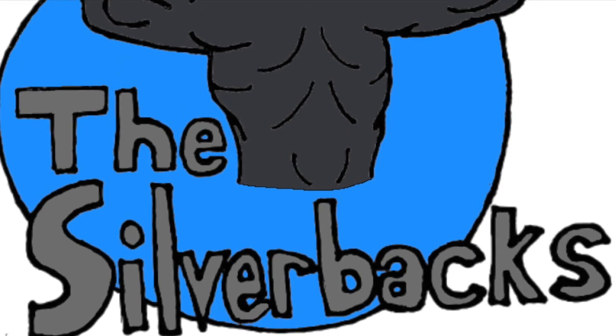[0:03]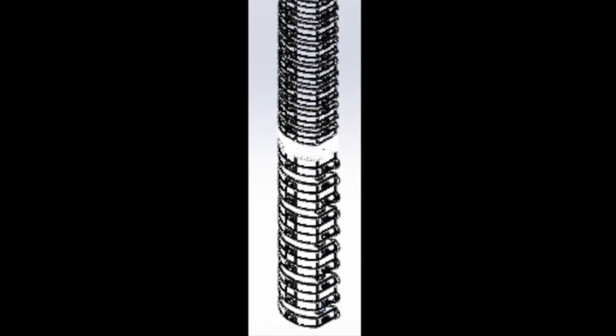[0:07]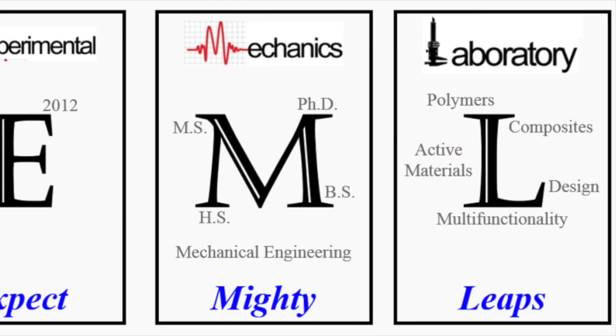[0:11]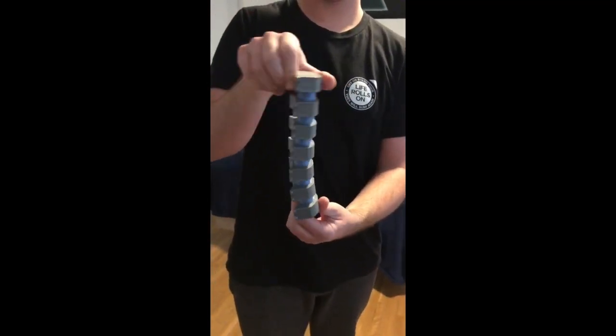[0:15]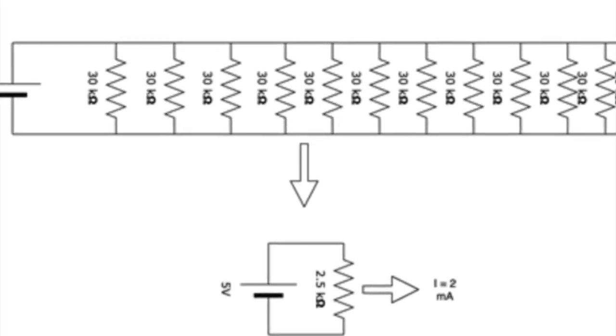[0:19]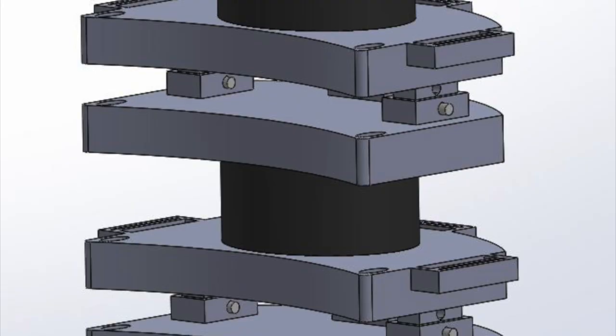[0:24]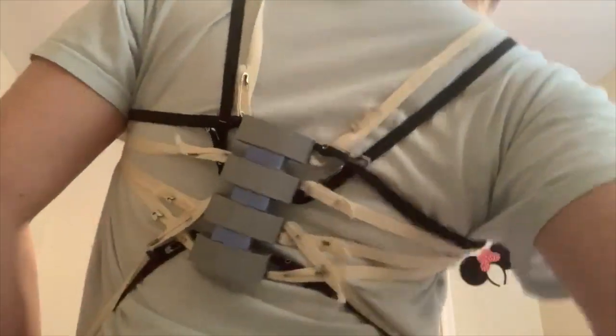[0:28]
Over the past 9 months, this design team has taken on the task of designing and manufacturing a biomechanical exoskeleton for Dr. Yusuf to use in his lab. The objective of this project was to develop a multi-degree of freedom research platform of an exoskeleton system, which will allow future research of the experimental mechanics laboratory.
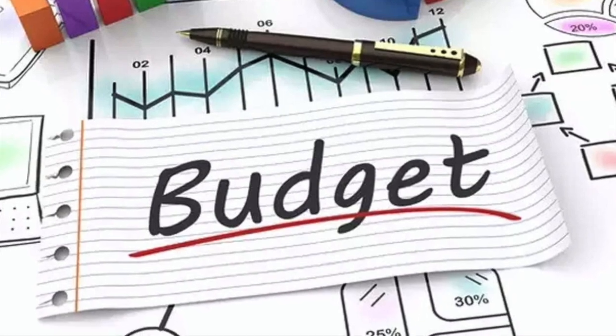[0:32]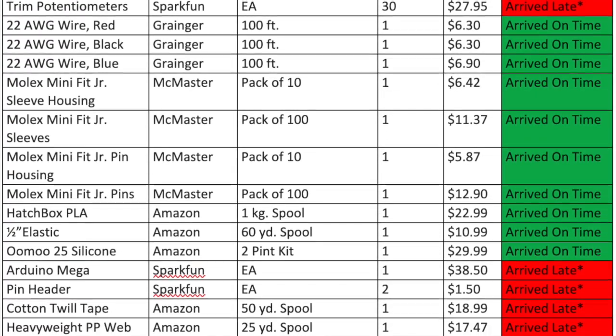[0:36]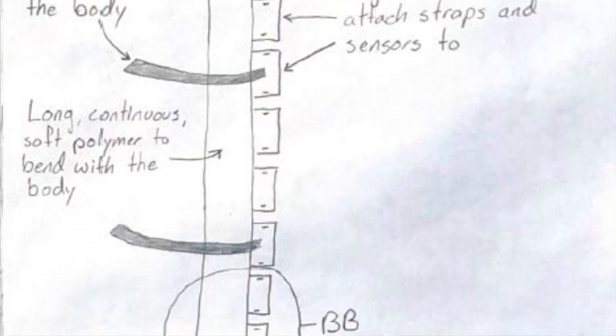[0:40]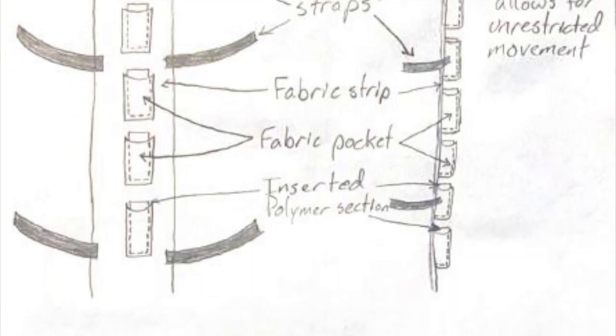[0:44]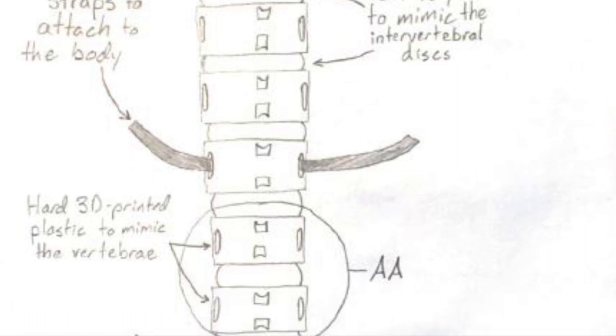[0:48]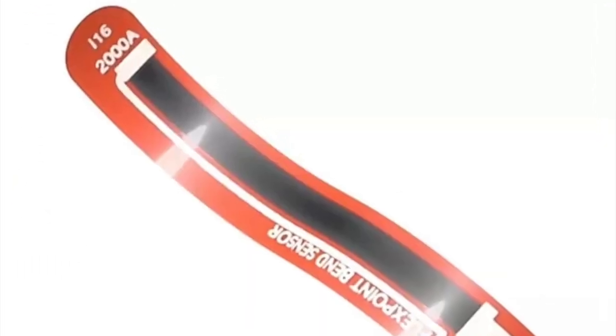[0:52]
We were expected to design, manufacture, and test an exoskeleton system to demonstrate its functionality and technical flexibility for future biomechanics-based research. Dr. Yusuf gave us a budget of $500, and because a device like this had never really been built before, we had a lot of research and planning to do. We came up with a few designs involving soft polymers and elastic before settling on a design that mimics the biology of the actual spine. The final design alternates hard plastic vertebrae with flexible silicone discs. As far as the electronics are concerned, we decided a design using bend sensors and potentiometers would be best for our timeline and budget. There are 7 requirements for this system.
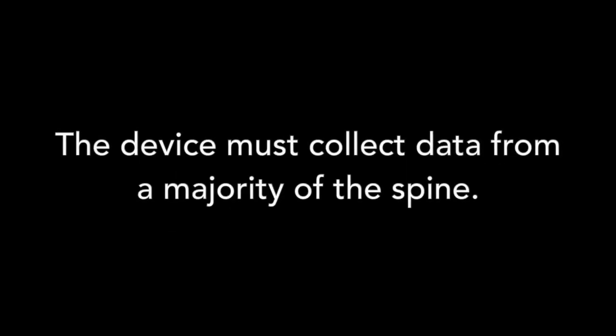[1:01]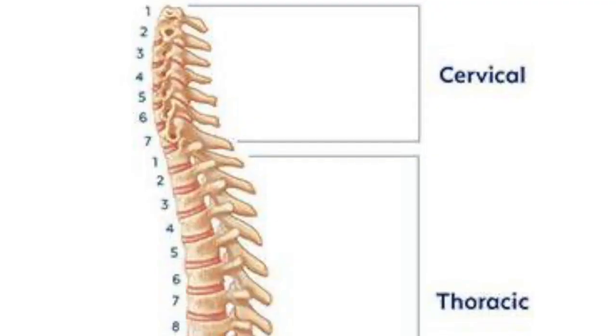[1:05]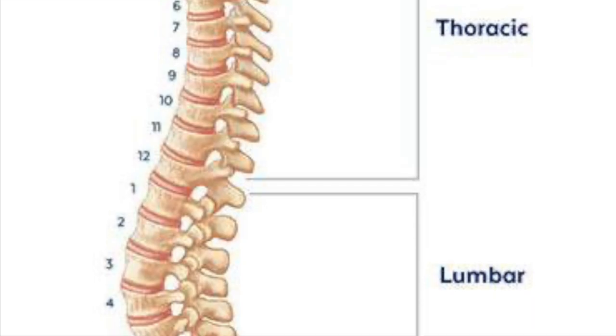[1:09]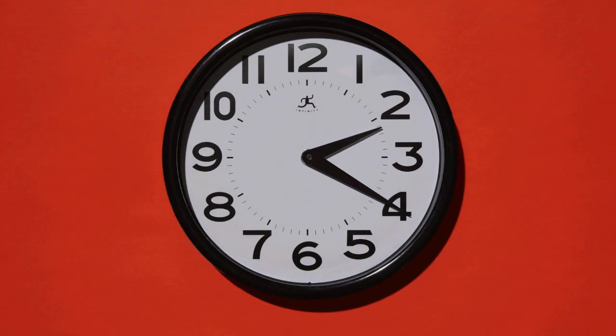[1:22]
Requirement 1. The device must collect data from a majority of the spine. To fulfill this, we decided our device will extend from vertebra C1 below the skull to L5, directly above the hips. Requirement 2. Design of the exoskeleton shall allow for acceptable portability and accessibility. This requirement is very broad and includes needing the exoskeleton to fit 90% of college males, take less than an hour to set up, and weigh less than 25 kilograms.
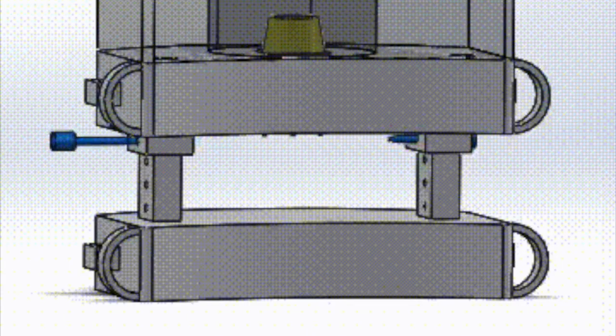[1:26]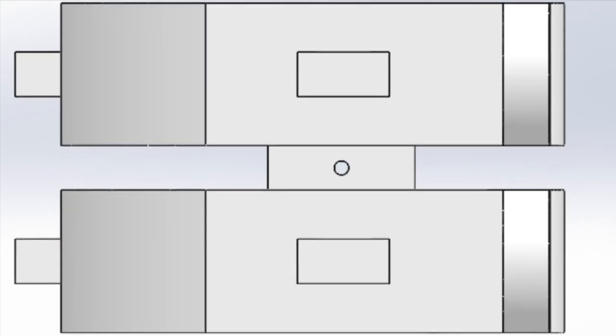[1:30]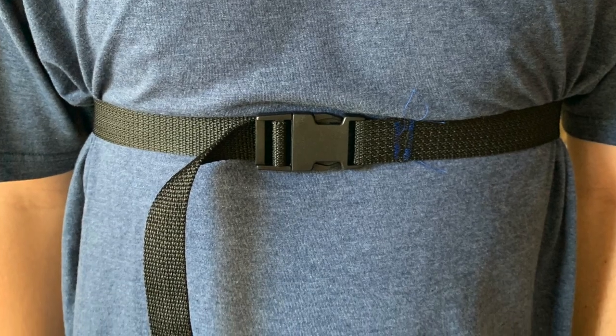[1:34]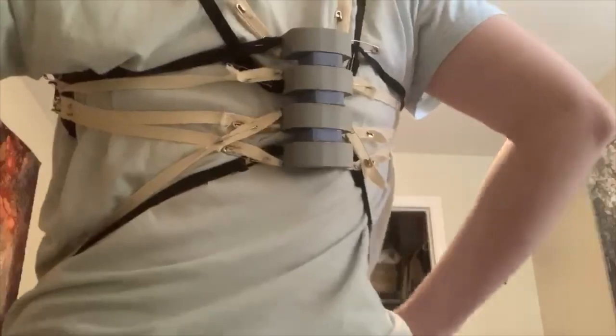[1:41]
In order to make the exoskeleton fit our target population, almost every part of it is adjustable. 19 of the 26 vertebrae can change height using a pin system, and each strap is adjustable in at least one spot. Once the exoskeleton's height is adjusted, it will take almost no time to set up, as it just needs to be put on and buckled. Because the entire system is mainly made of plastic and silicone, the weight limit was easily attainable.
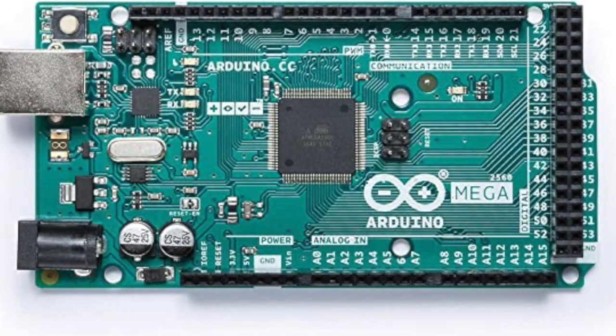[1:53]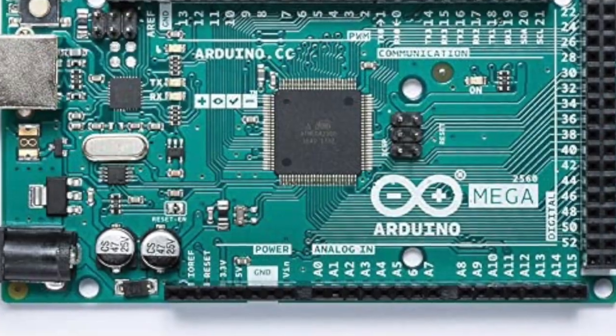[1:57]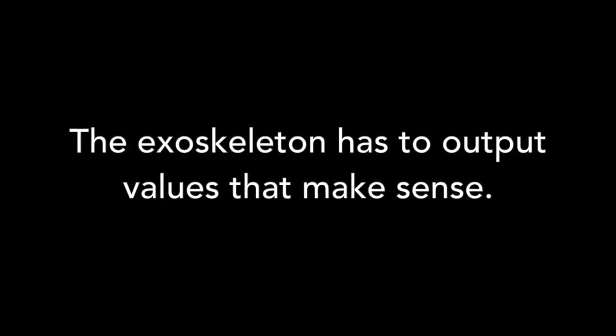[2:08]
Requirement 3. The exoskeleton shall collect data and output it in a sensible format. Because the bend sensors do not directly output information on the forces of the spine, an Arduino had to be incorporated with code to convert the bending data to a force. Requirement 4. The exoskeleton has to output values that make sense. Dr. Yusuf informed us that our device should output numbers within 10% of what is found in literature.
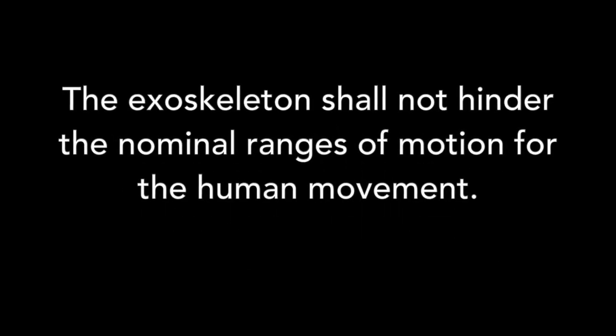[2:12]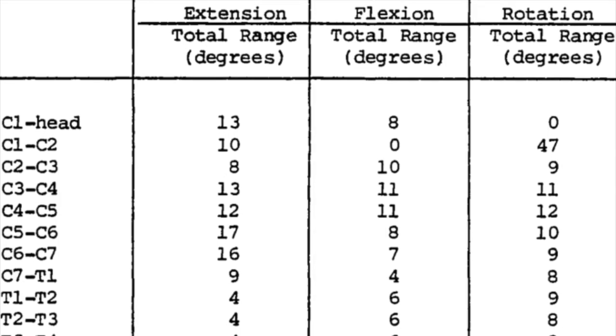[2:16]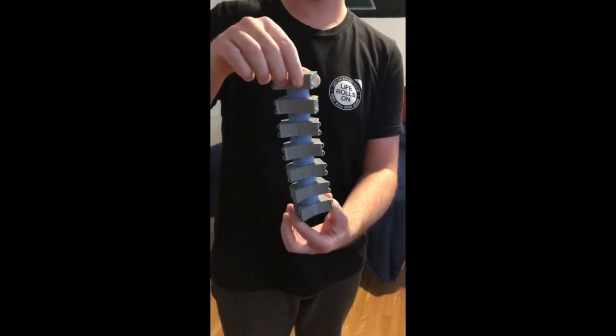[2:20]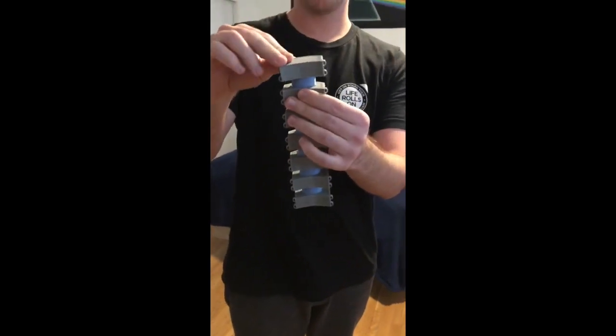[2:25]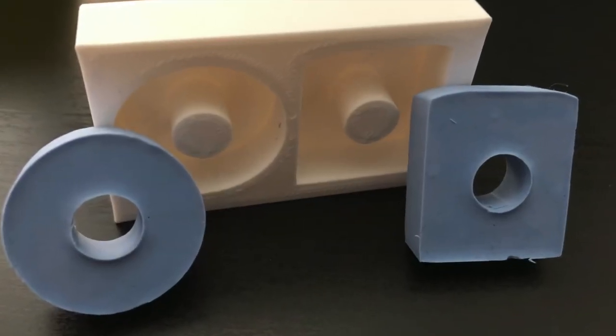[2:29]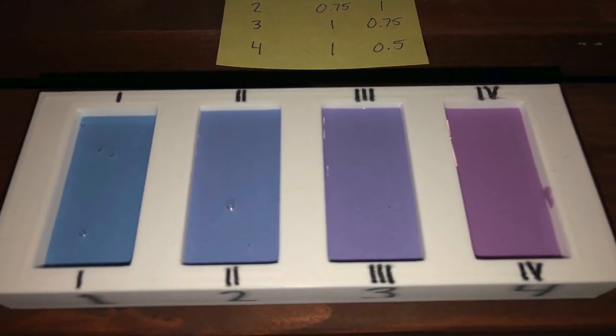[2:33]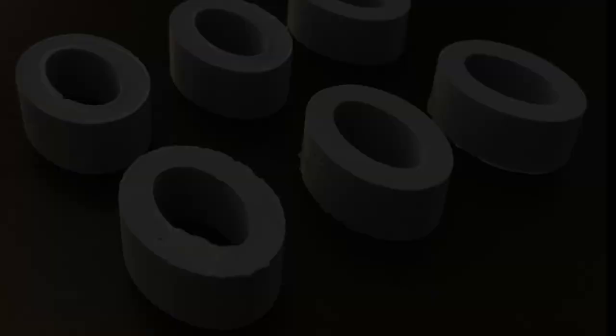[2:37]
Requirement 5. The exoskeleton shall not hinder the nominal ranges of motion for human movement. In order to satisfy this requirement, we had to ensure that each portion of the spine was able to move in the same ranges of motion as the normal spine. This ended up being between 10 and 30 degrees of flexion. For rotation, the lower spine needed about 10 degrees and the neck required up to 45. After many iterations of silicone disc design and ratio, we decided on a donut-like shape that did not reach the edge of the vertebrae on either side with a 2-to-1 ratio of silicone.
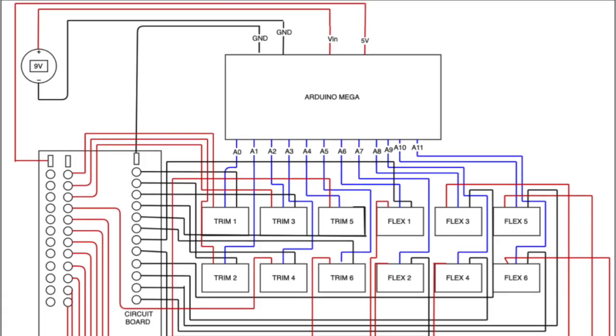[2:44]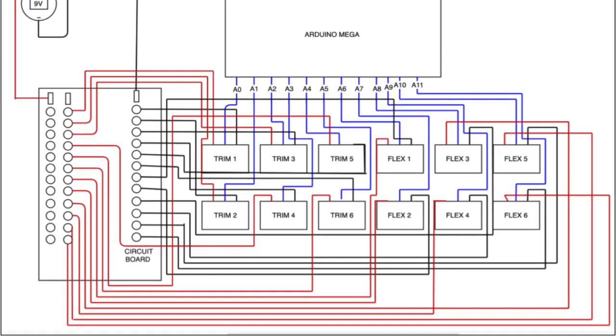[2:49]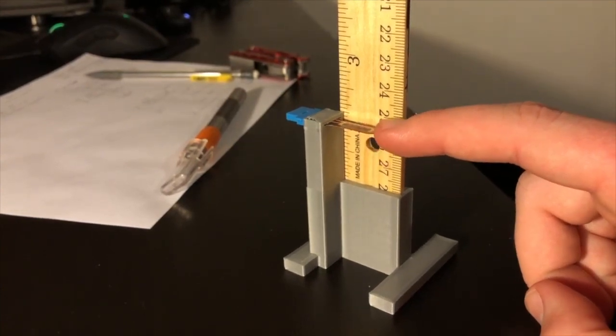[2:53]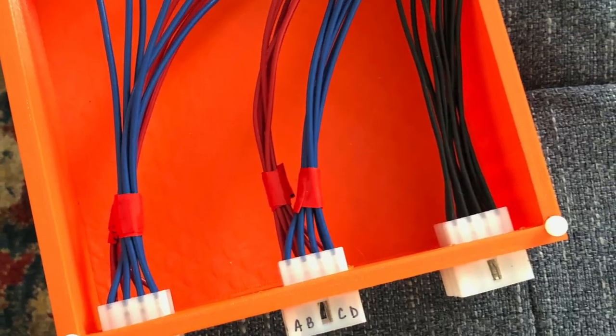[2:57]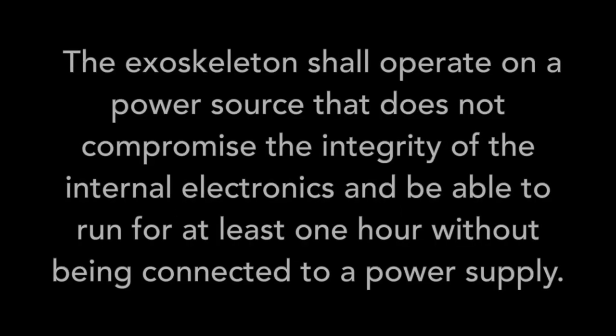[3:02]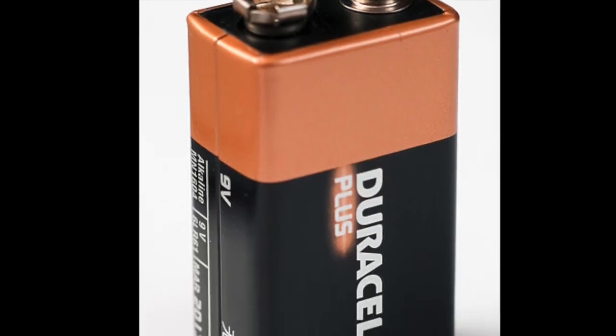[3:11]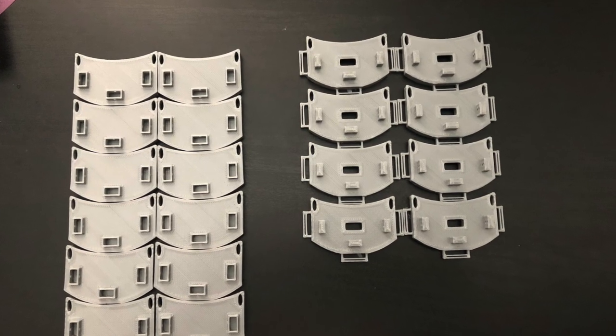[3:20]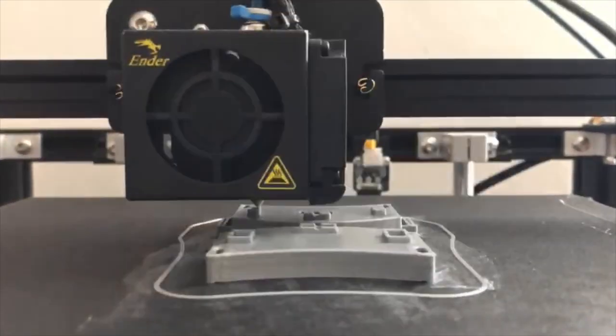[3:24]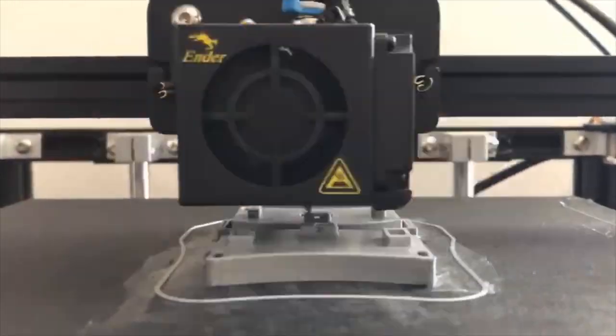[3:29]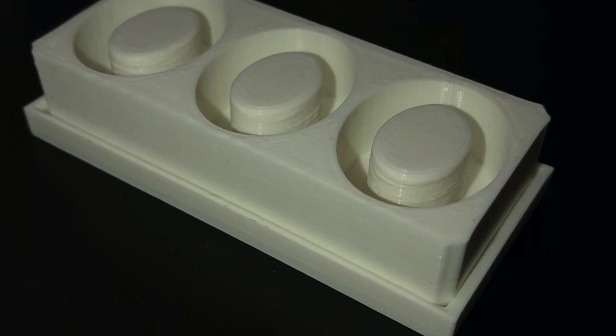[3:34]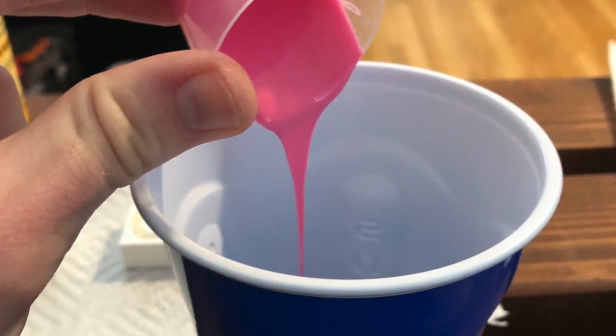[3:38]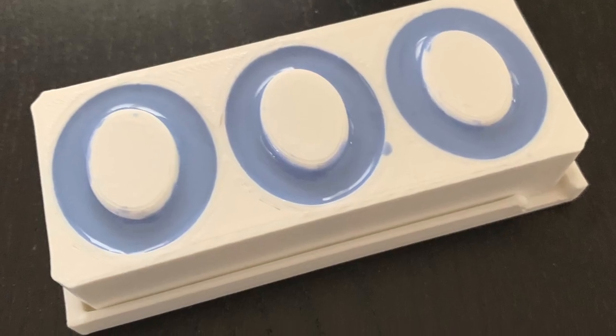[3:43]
Manufacturing this project ended up being more work than we were anticipating. Each section of the manufacturing involved very different processes. The 19 vertebrae that changed height needed to be printed in 2 halves, and the remaining 7 cervical vertebrae were printed as 1 unit. The prints ran for a total of about 40 hours. Each disc was casted using an elliptical donut-shaped mold so that the potentiometers could be placed in the center of the discs. We used UMU 30 silicone at a ratio of 1 part A to 2 parts B to achieve the desired flexibility in each disc. After curing for 6 hours, the discs were complete.
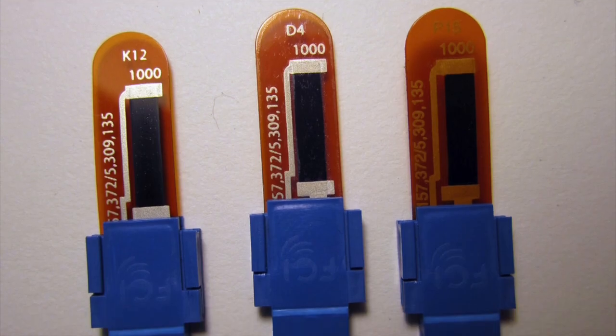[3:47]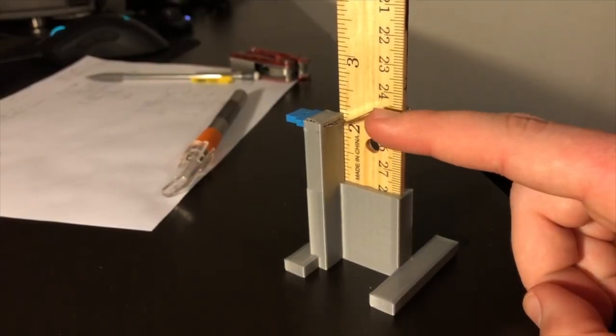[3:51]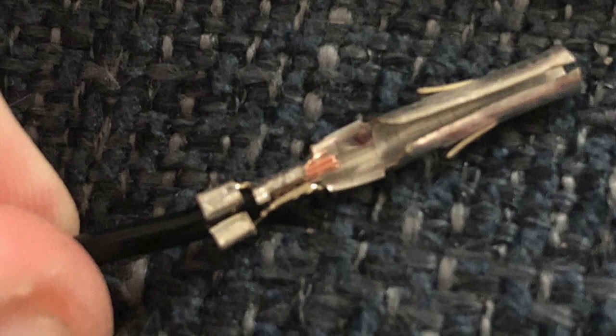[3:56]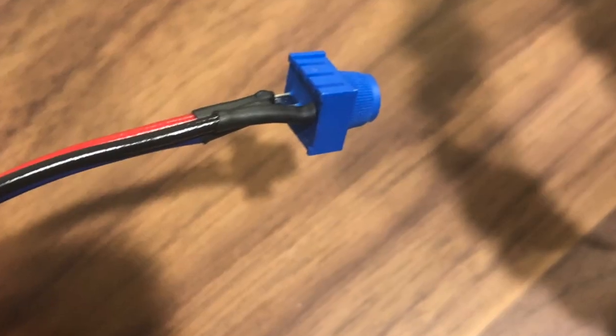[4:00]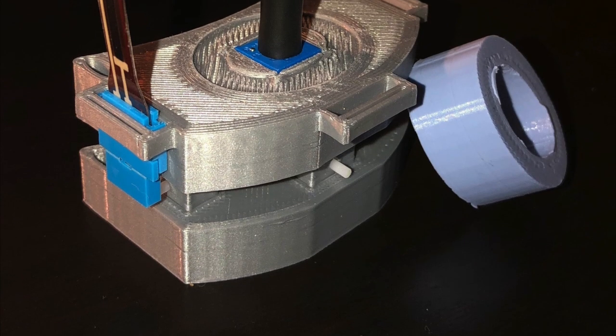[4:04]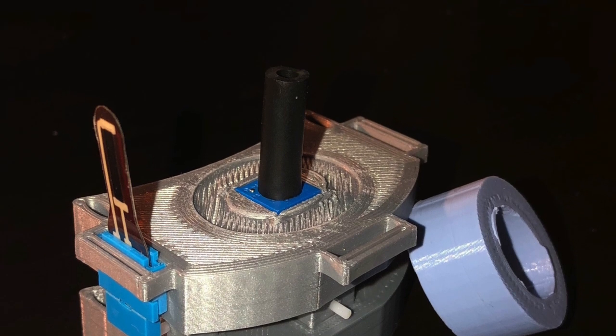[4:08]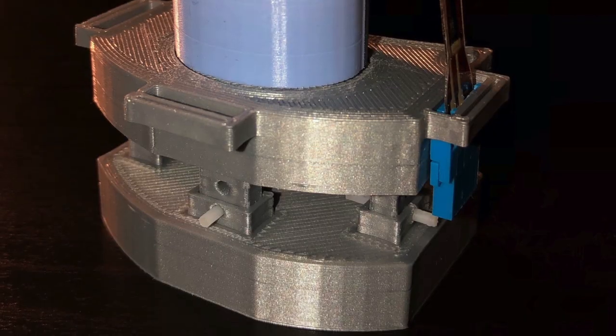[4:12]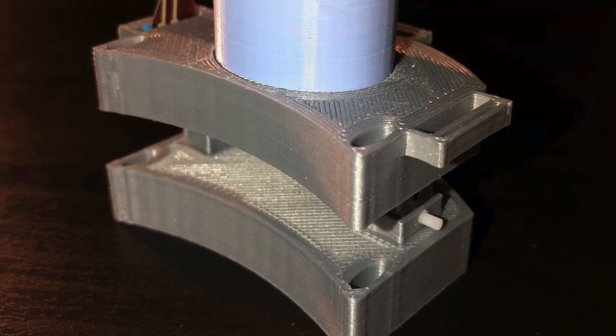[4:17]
The bend sensors are not permanently attached to the exoskeleton, so their assembly simply involves soldering the wires to the sensor, applying the heat shrink, cutting the wire to length, and crimping the end to the Molex sleeve. The potentiometers are a little more complicated because they need to be surrounded by the silicone discs. Before gluing each disc in place, the potentiometer needs to be positioned in its hole in the vertebra and have the appropriate length rubber hose secured on so it can sense the rotation of the vertebra above it. Then, the disc can be glued on its surrounding vertebrae, and after drying for 24 hours, it is ready to go.
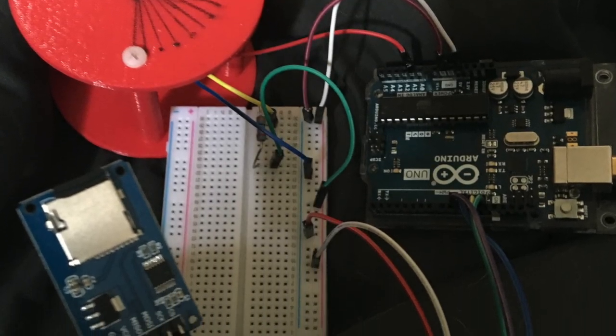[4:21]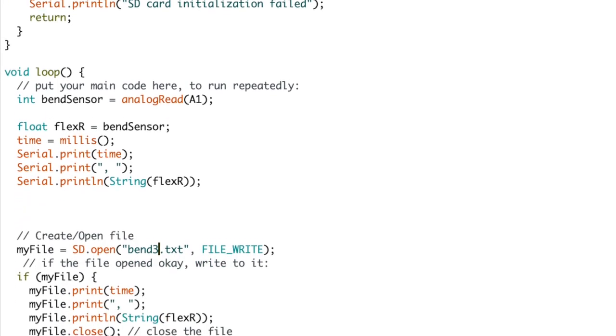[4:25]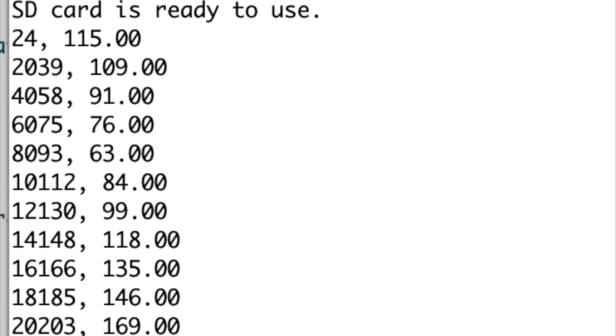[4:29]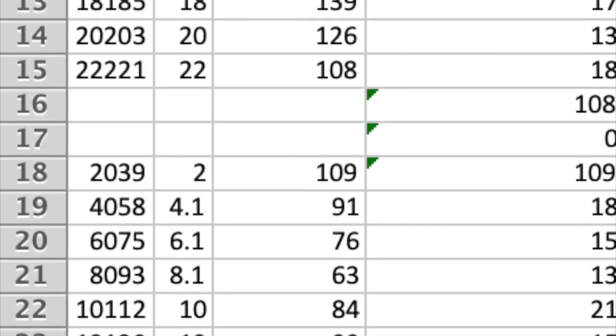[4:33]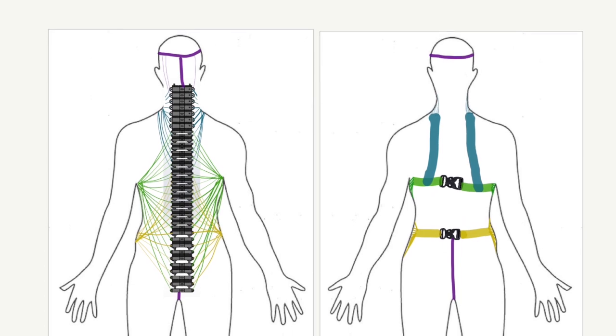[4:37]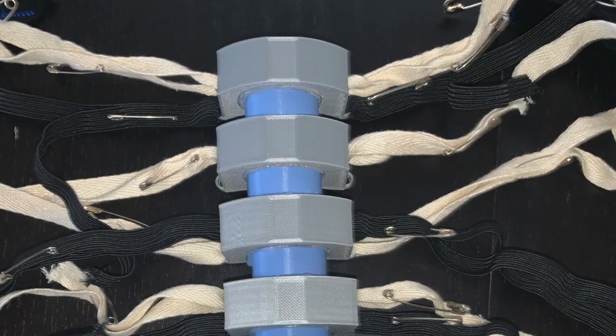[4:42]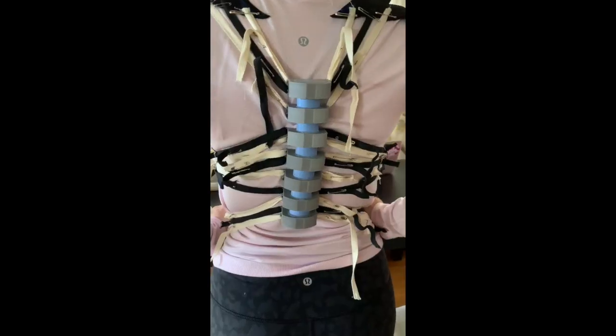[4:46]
In order to read the values given by the sensors, we wrote a code that plots the time in seconds against the position of the sensor while transferring all this data to an SD card. The SD card then outputs all the data to an Excel sheet. From the Excel sheet, we can use formulas to convert the position to the appropriate force. In order to attach the exoskeleton to the body, a strapping system using cotton and elastic was designed. The elastic keeps the exoskeleton pressed against the body, while the cotton pulls the exoskeleton as the body moves.
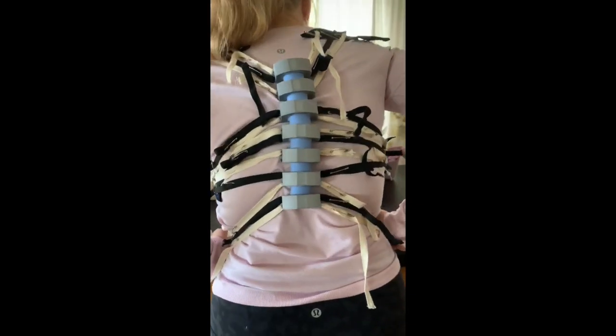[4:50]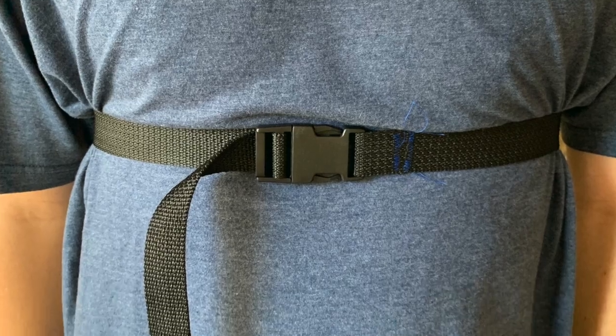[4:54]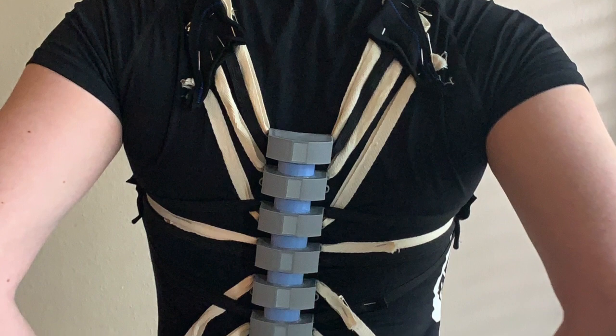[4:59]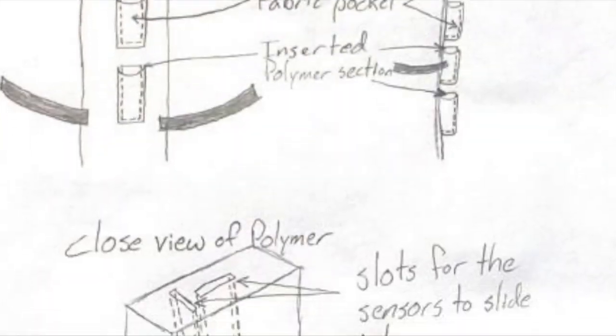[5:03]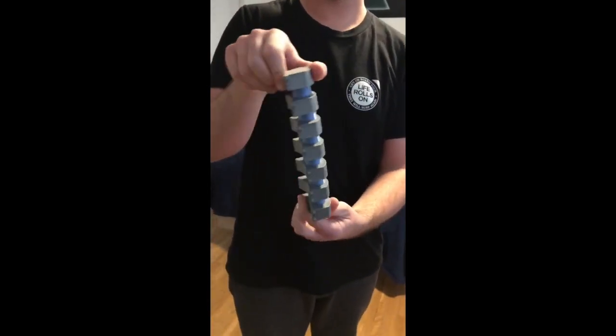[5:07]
After the entire exoskeleton was assembled, individual straps were cut to length and sewed into place. There are buckles attached to each strap on the front of the body so large adjustments can be made, and each cotton strap has a strip of Velcro so that finer adjustments can be made for a snug fit on each person. After almost 9 months of work, we have a fully functioning biomechanical exoskeleton that can sense flexion and rotation along the length of the entire spine.